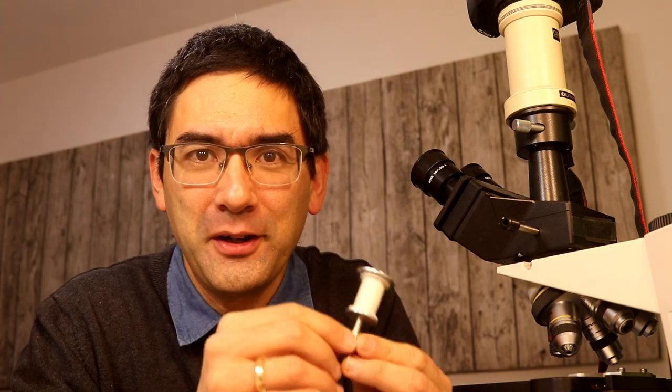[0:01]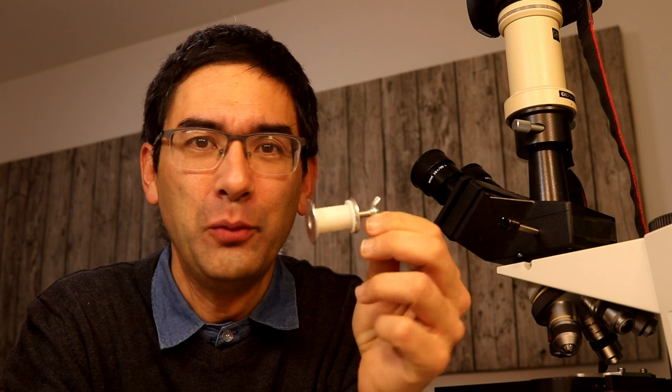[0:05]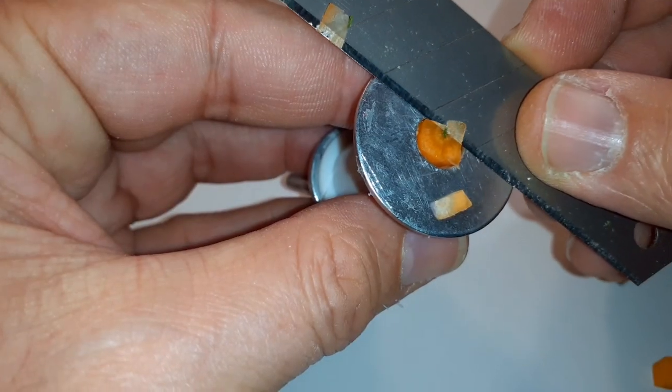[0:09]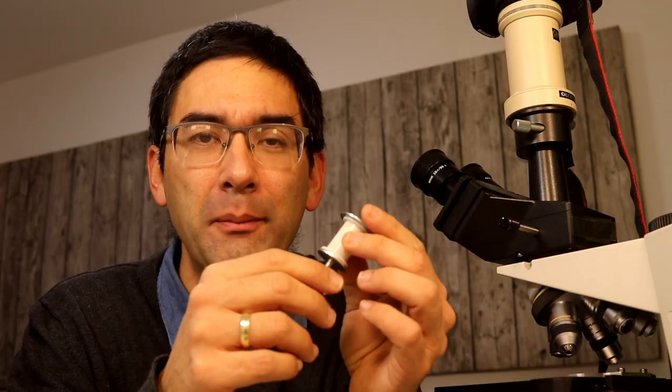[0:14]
Hi, Microbehunter here. This here is a small do-it-yourself, a small homemade microtome. For those of you who don't know what a microtome is, it is used to make very thin cuts for specimens to be used for the microscope, for microscopy. This homemade microtome was basically free of charge.
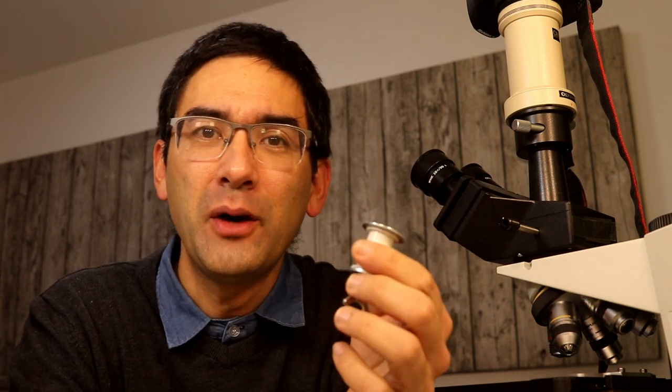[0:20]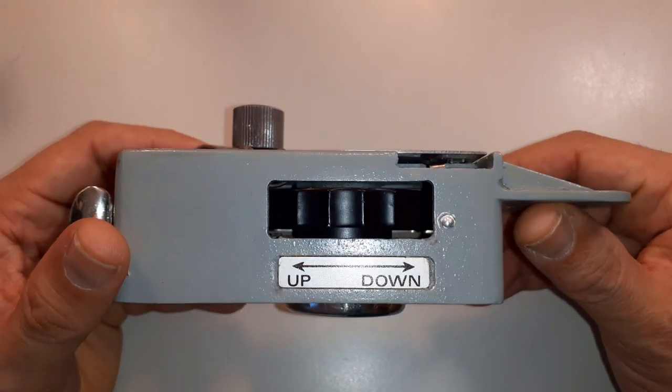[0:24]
In a previous video, I already showed you a commercial microtome, which was extremely expensive, between 300 and 400 euros or dollars. And it might not always be worth spending so much money for a microtome if in some cases a small homemade device like this also does the job.
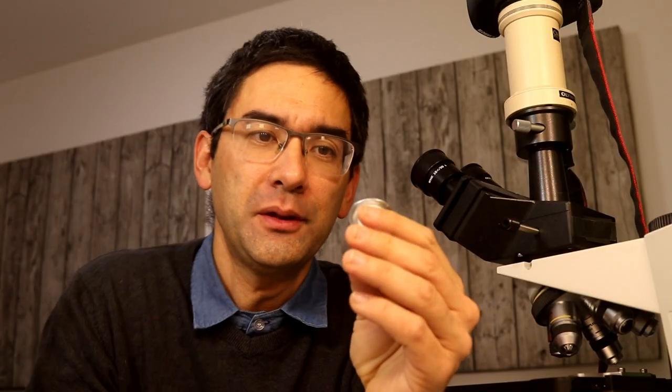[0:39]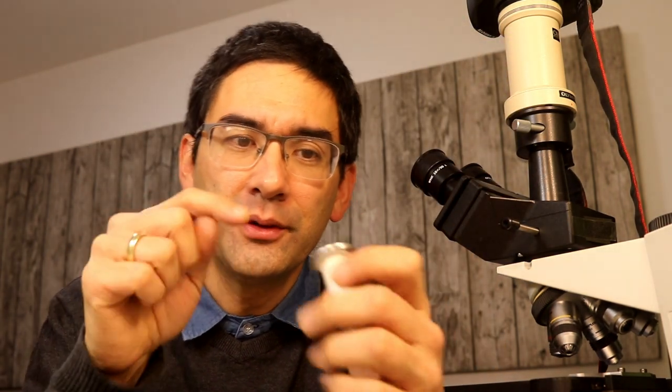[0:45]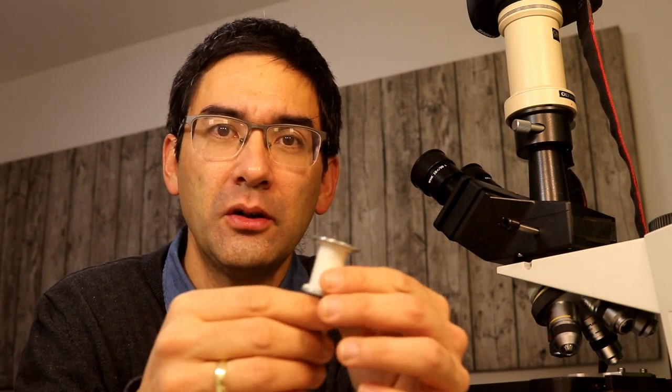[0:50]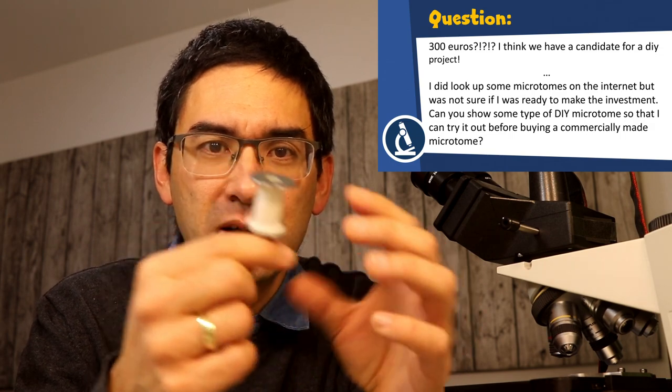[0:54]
Now I did not get the idea myself, but rather it's in a microscopy book here. That's the German version. There is a link to the English translation down in the description. In this book there is a small drawing of how such a homemade microtome could look, and that's basically the drawing that I used to base this one on.
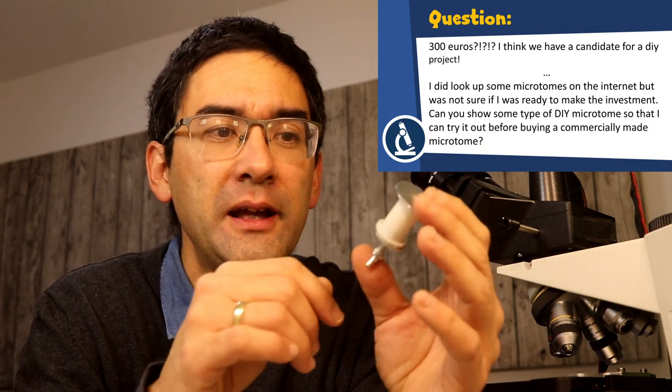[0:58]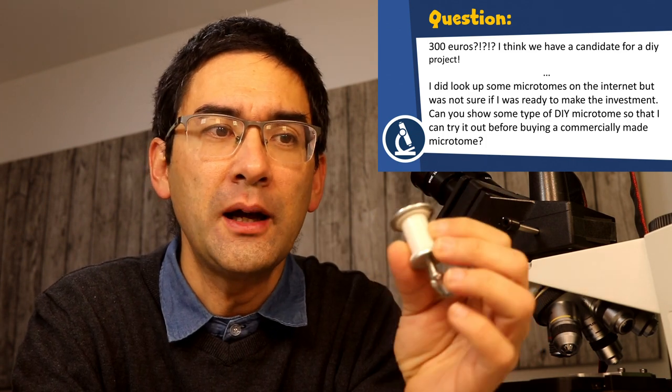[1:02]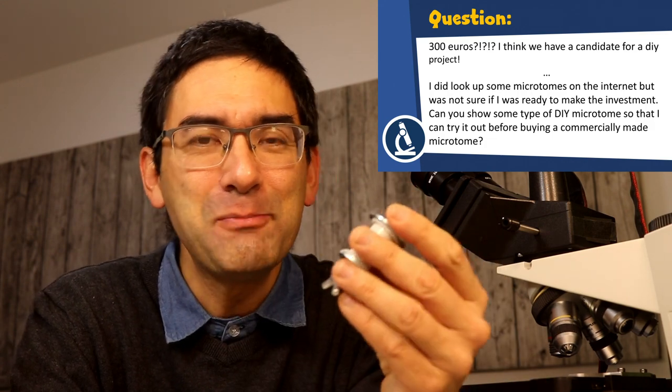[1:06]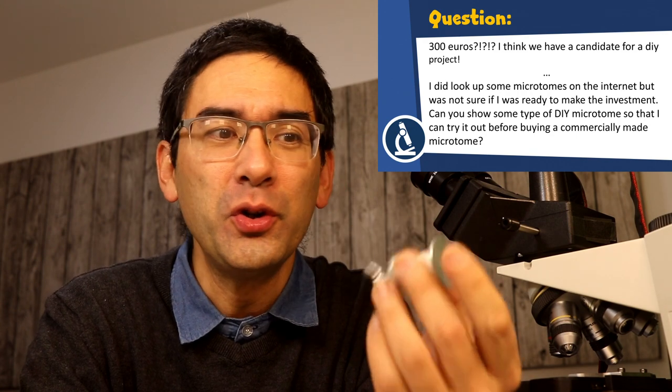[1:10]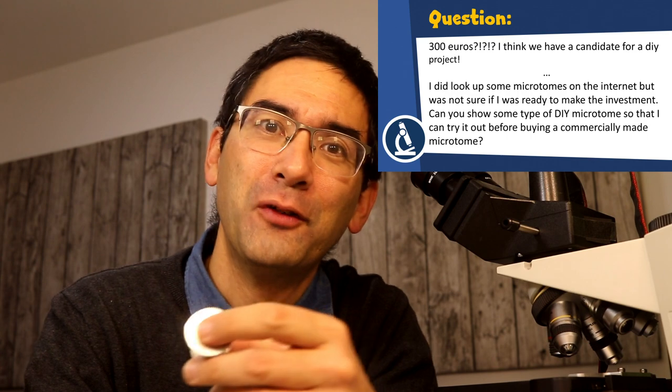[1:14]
I of course had to modify it, but I would say that you probably should first try to make a small microtome like this yourself before you start spending quite a bit of money for a commercial one. So I'm just going to show you what I did, and then you can take it from there, modify it yourself and improve on this. Okay, so let's get started.
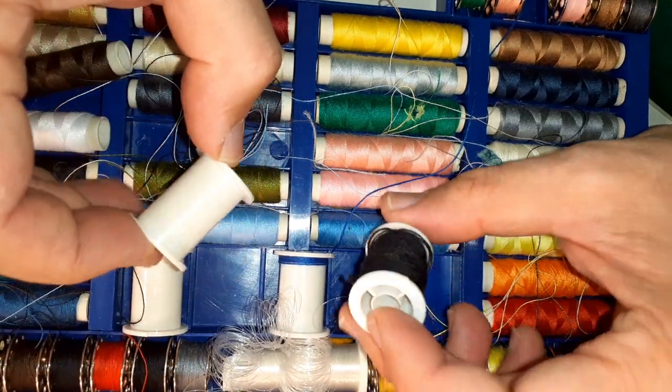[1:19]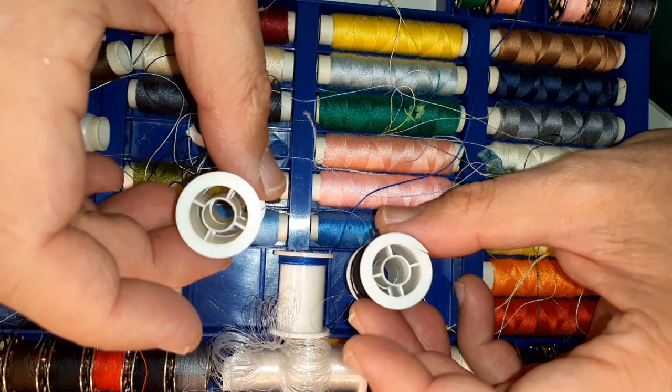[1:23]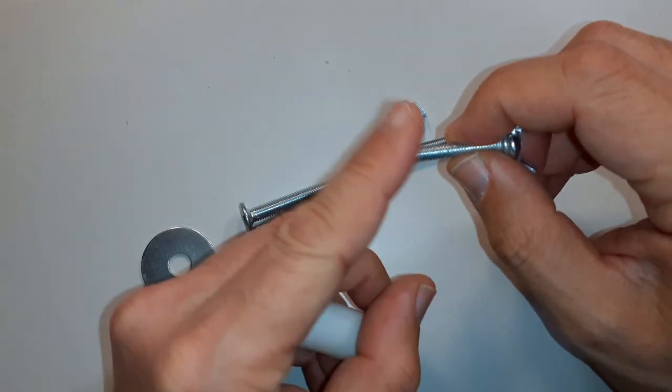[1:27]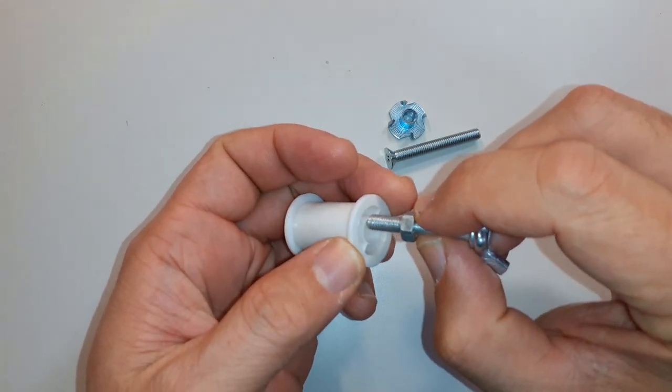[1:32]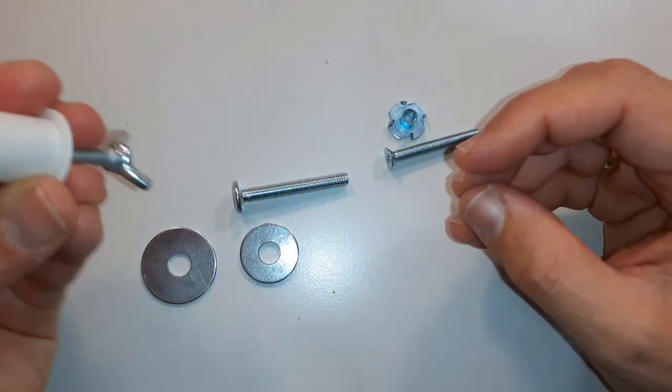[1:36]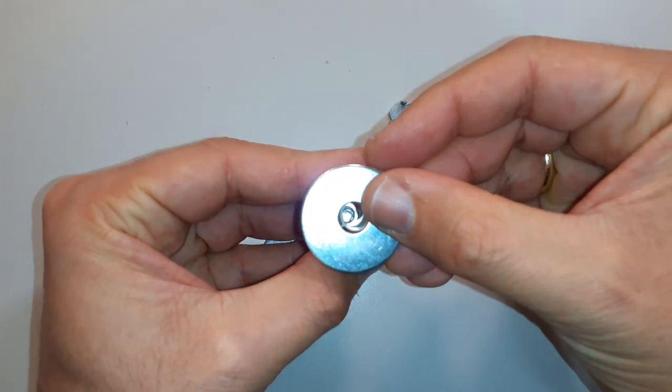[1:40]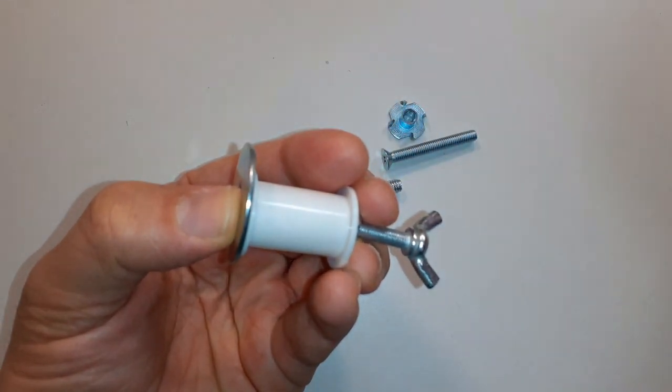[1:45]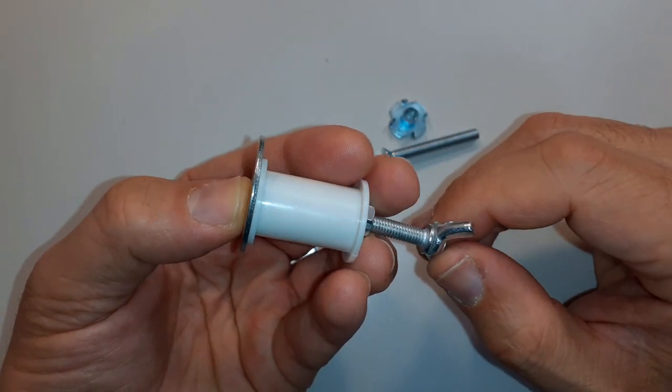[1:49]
The basis of the microtome, the body, so to say, is a thread reel. These days they are made of plastic; in the good old days they were made of wood. I also scavenged my cellar a little bit for nuts and bolts, and I was trying to find some that fit in here. I also found some washers. These washers are pretty important because they also serve as a base for making the cut.
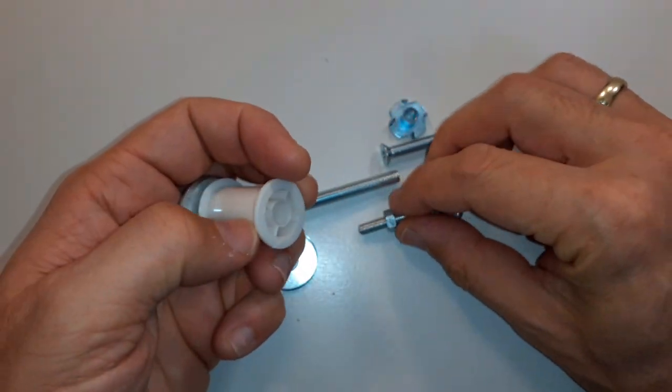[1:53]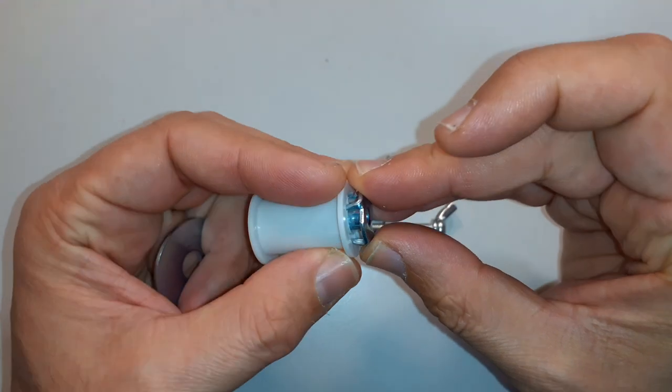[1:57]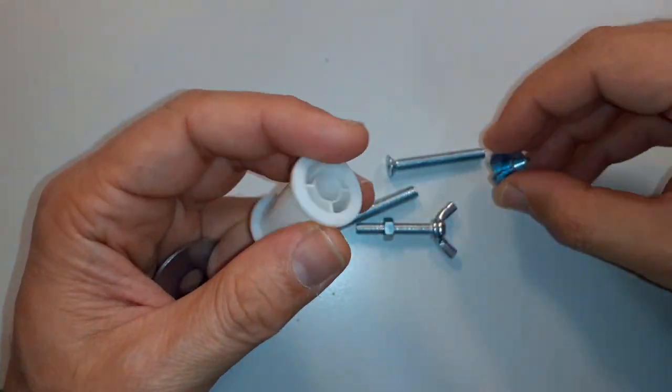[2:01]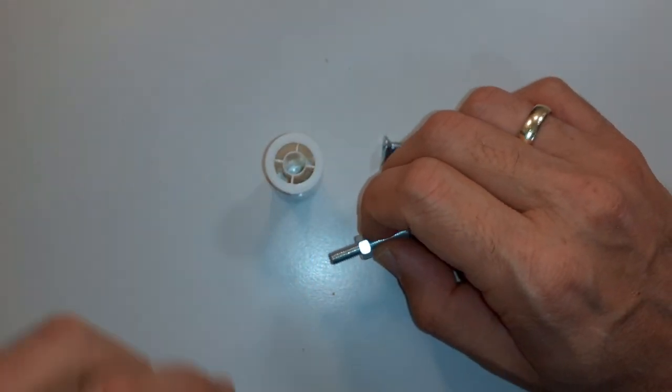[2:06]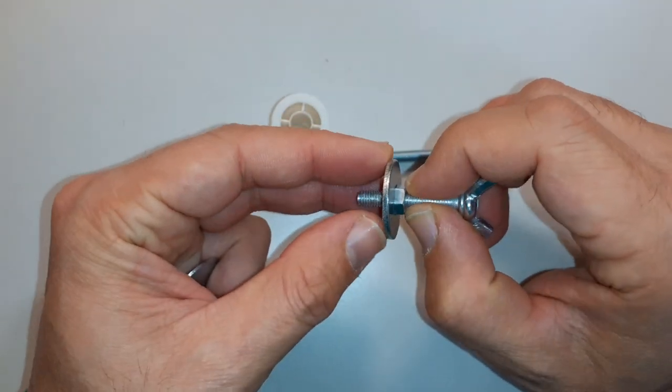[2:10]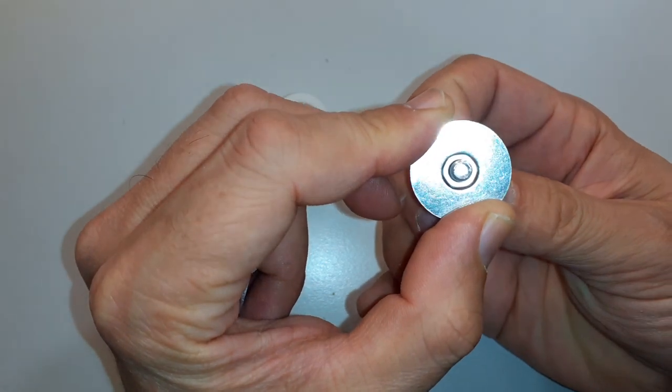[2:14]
The only problem is how am I supposed to fix the nut on the bottom of the thread reel. I was looking around for other possibilities, but I decided not to use this part here. I don't even know how this one is called in English. Then I found a second, smaller washer, and by good chance the nut was able to fit into the center of this washer.
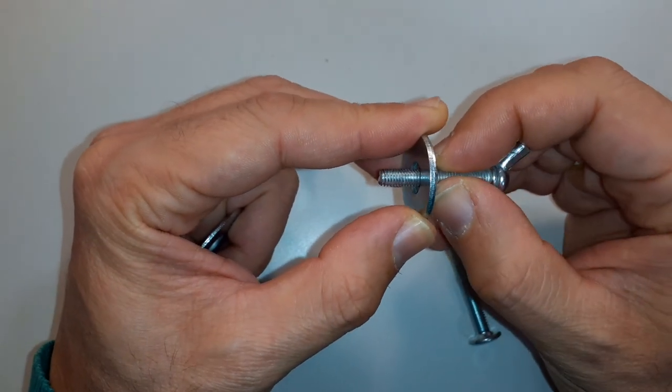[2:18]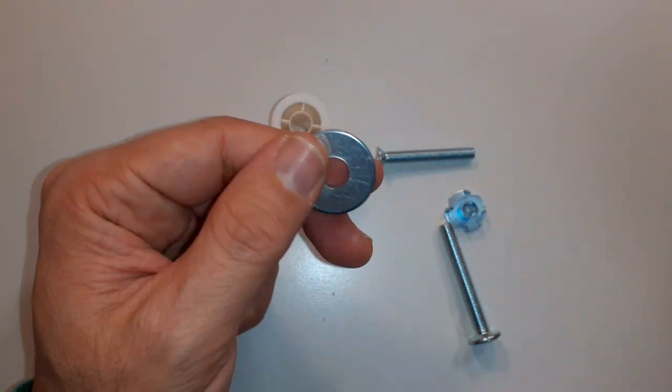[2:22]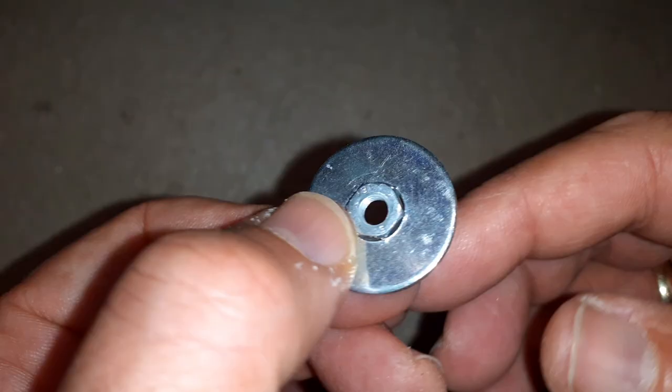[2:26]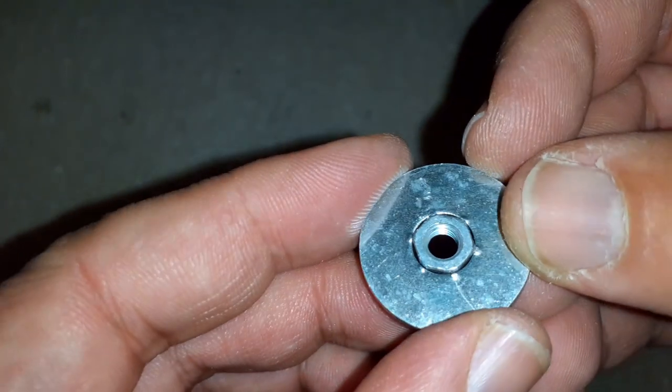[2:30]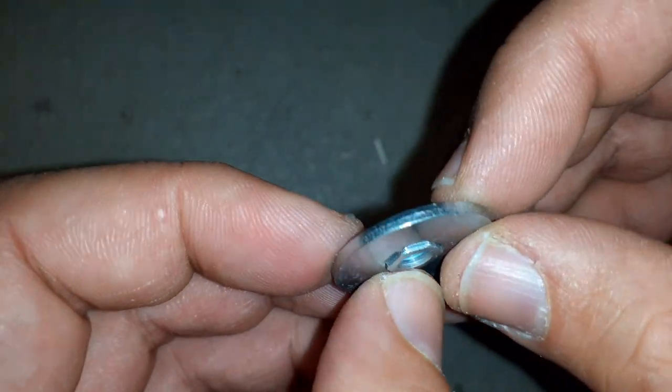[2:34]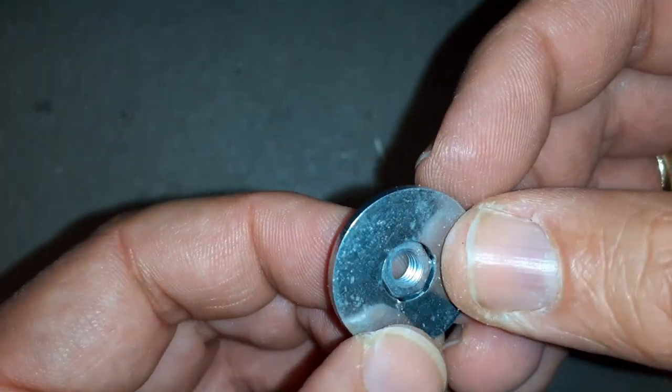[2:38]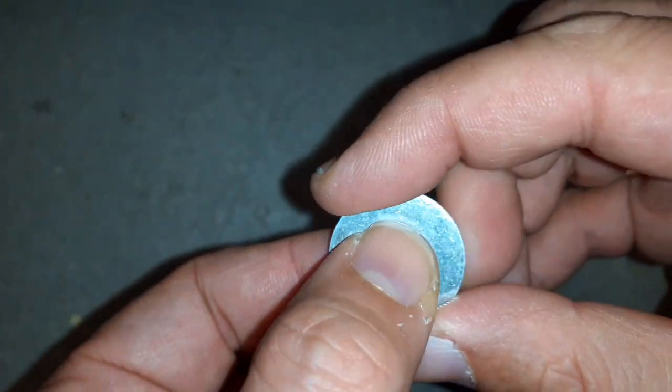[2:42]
So I tried to somehow connect them so that I have an easier possibility to glue the washer to the thread reel. I hammered it in and it looked quite solid. You can even see that the washer is a little bit deformed. But unfortunately, it was totally unstable. It popped out right away. So I needed a way to properly connect these two parts.
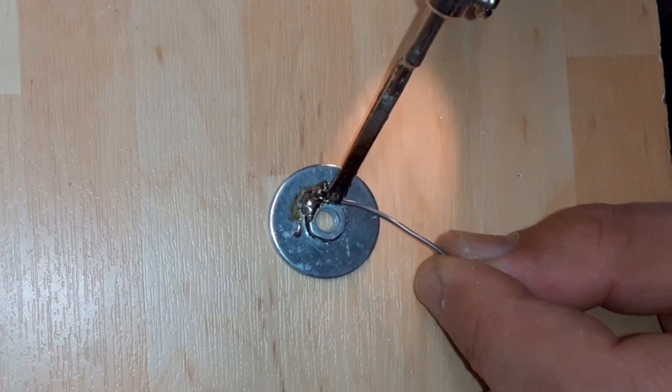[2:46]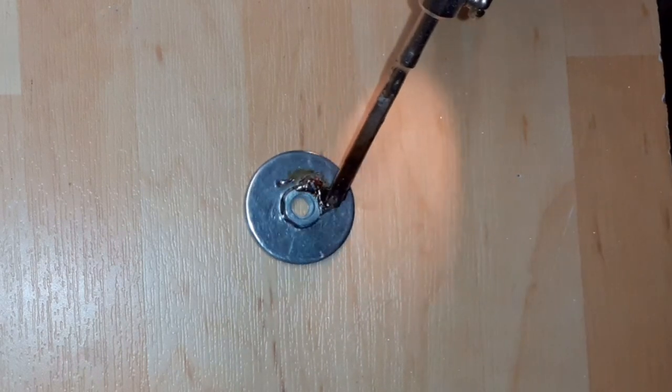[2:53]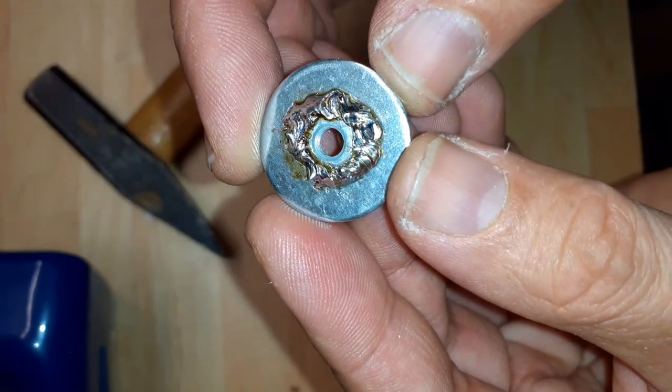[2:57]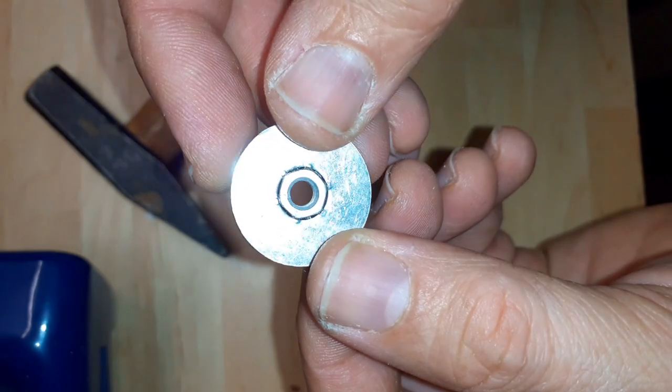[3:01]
And I used my high-performance soldering iron. It was still not quite easy because the metal absorbed the heat so quickly and cooled down so quickly that it took me quite a bit of time. And it did not look very nice. So there's got to be a better way of doing that.
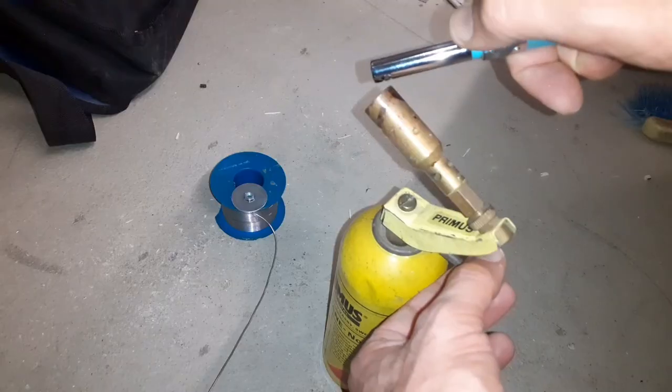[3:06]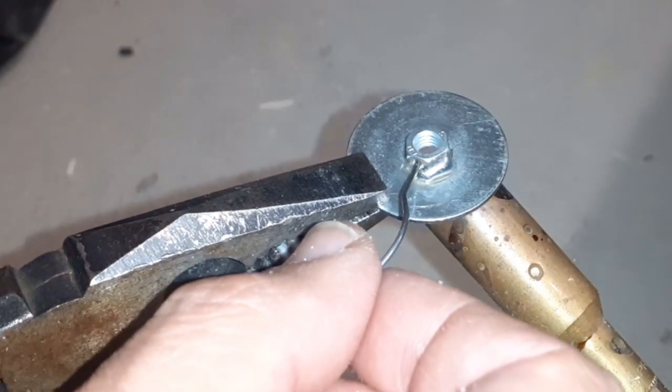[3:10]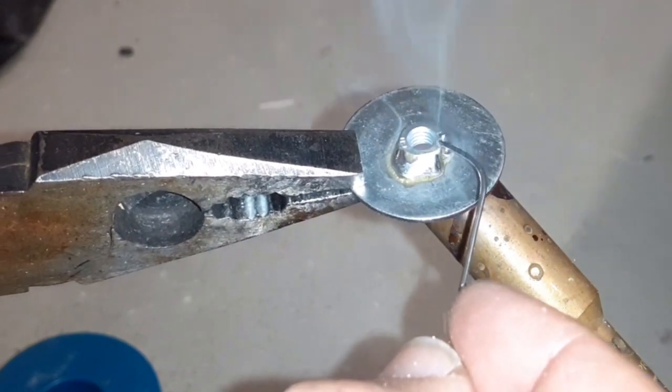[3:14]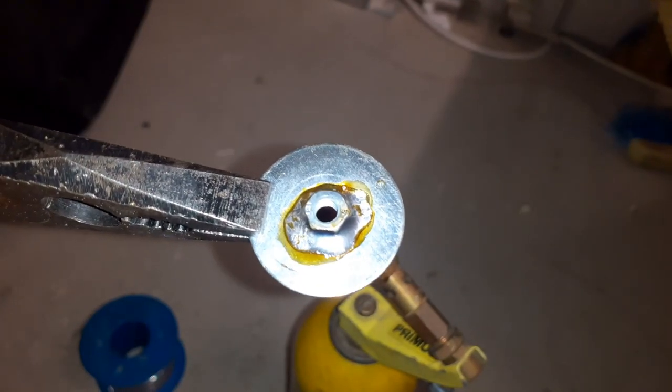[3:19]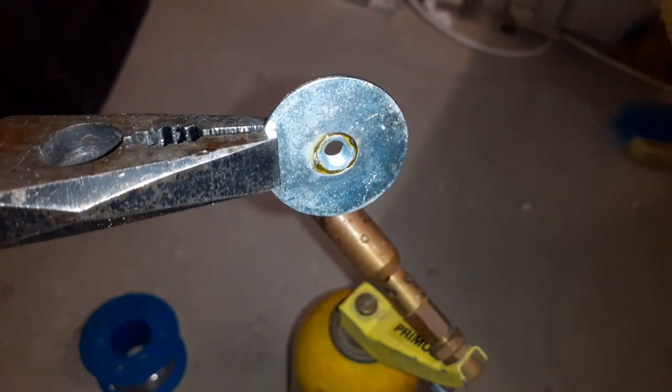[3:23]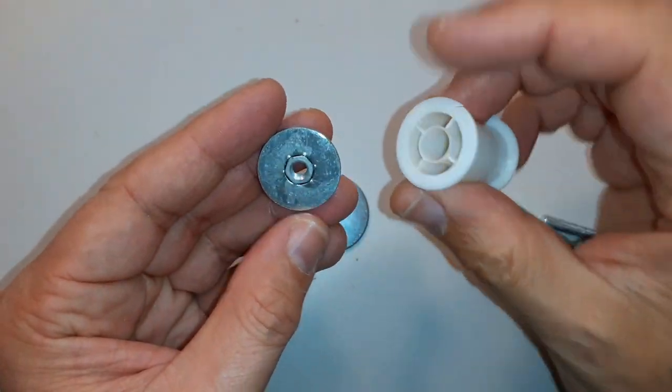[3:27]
But it was actually a strong and stable connection, and I discovered, far too late, that you can also use a gas burner like this to directly melt the solder and connect it together. It was much faster, much easier, and it also looked much nicer. So that's actually the recommended way, and I did not end up using it because I discovered this possibility only after I already finished the microtome.
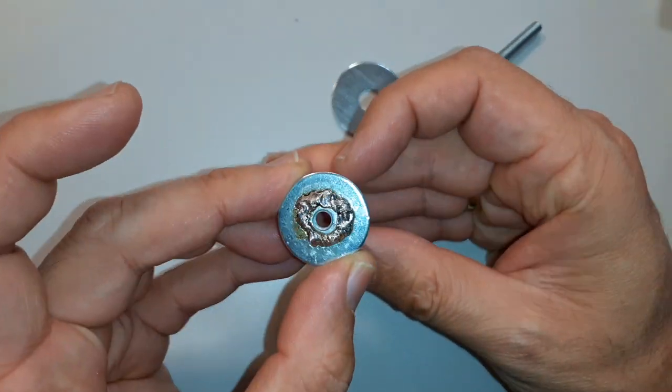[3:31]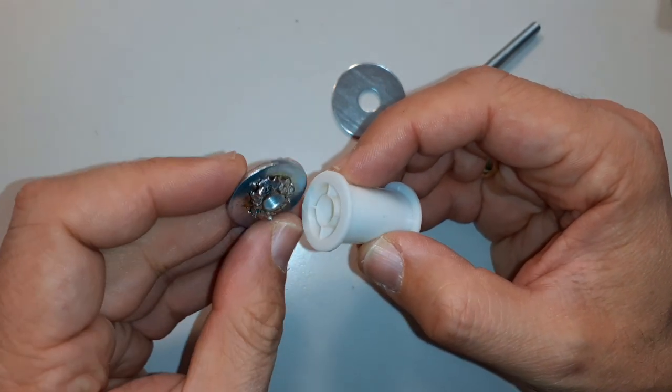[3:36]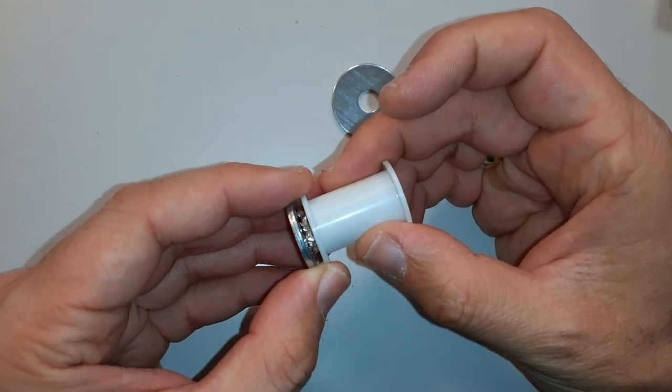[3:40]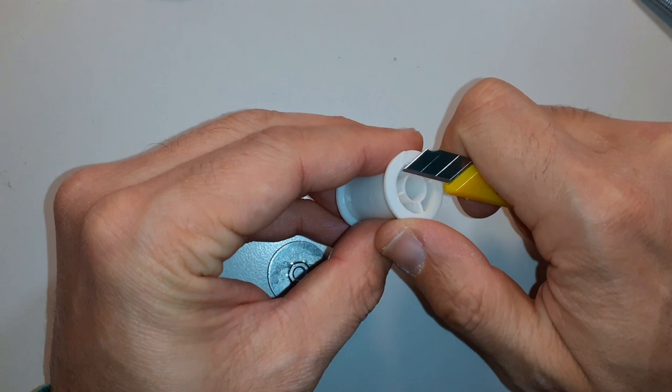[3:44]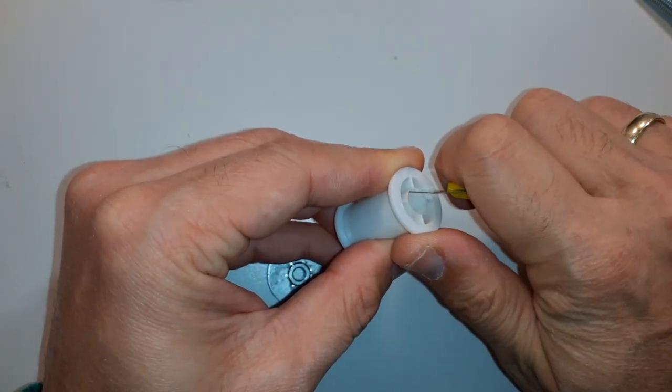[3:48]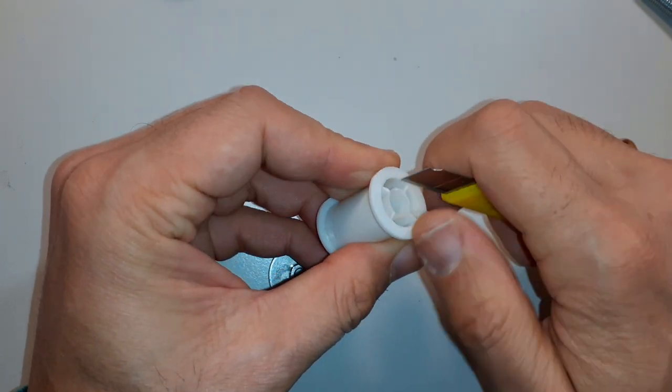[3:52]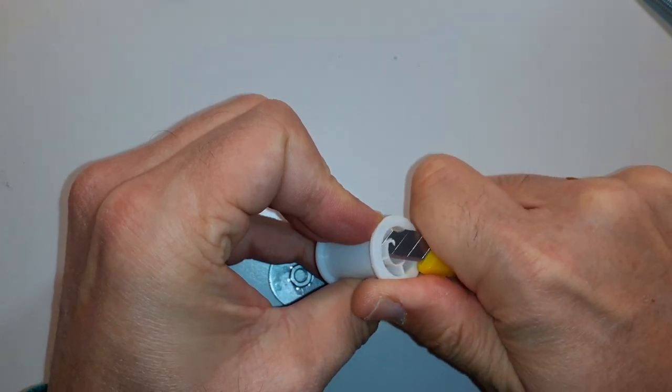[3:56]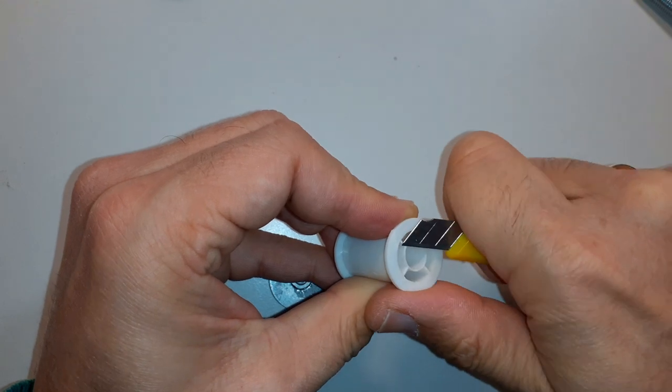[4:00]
I can either glue it like this, but it doesn't look nice. So what I'm going to do is remove the central part here. I'm going to remove a little bit of this plastic so that it can hide my embarrassment, the embarrassment that it looks kind of ugly. The plastic was soft enough that it was possible to easily remove a couple of millimeters of the central part of the thread reel. That's only cosmetics, so this is absolutely not necessary. It just makes the whole thing appear a little bit nicer.
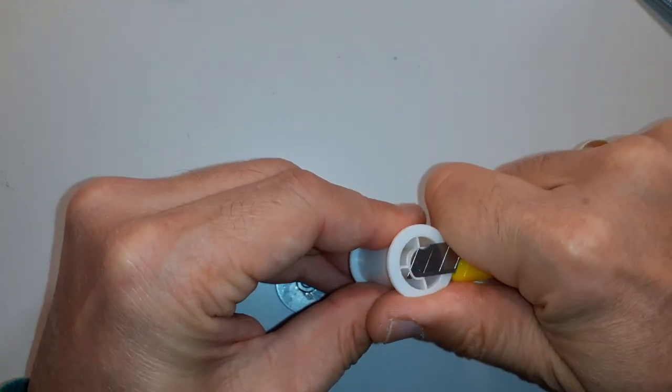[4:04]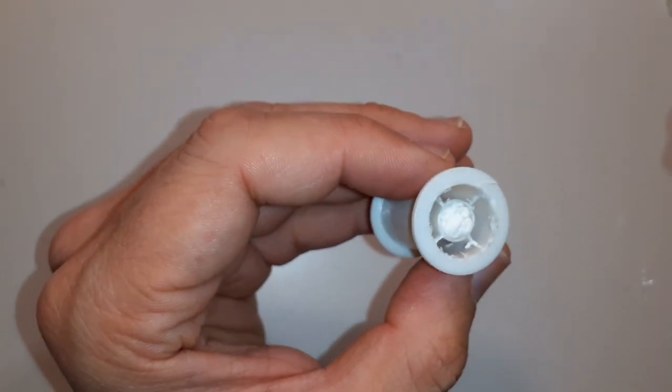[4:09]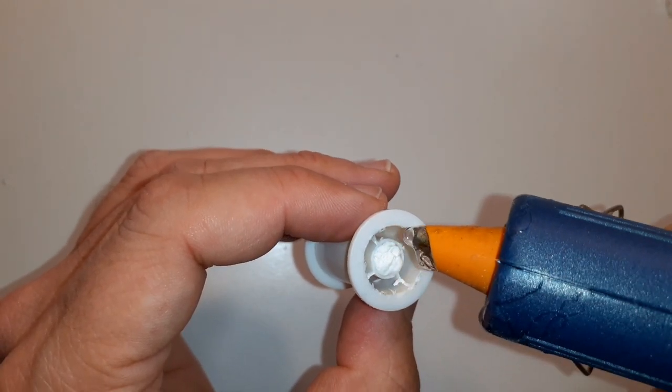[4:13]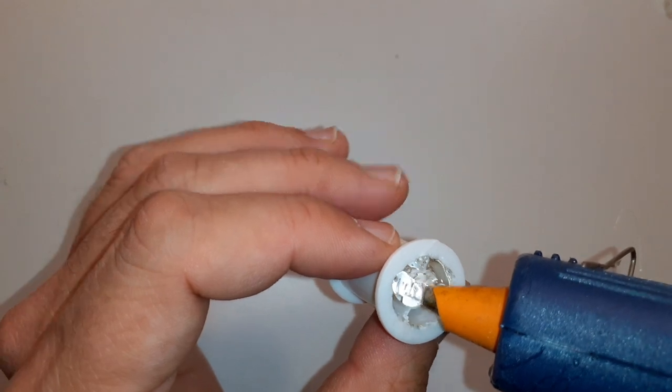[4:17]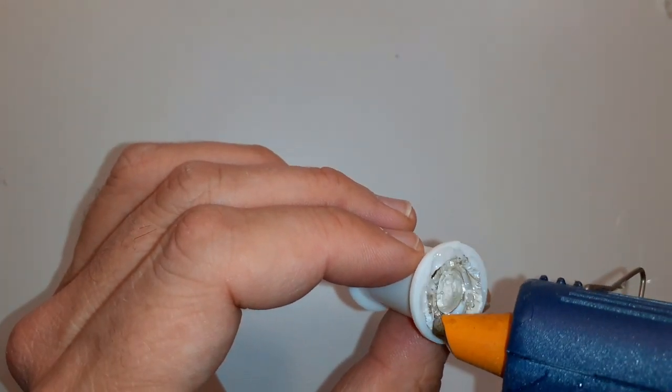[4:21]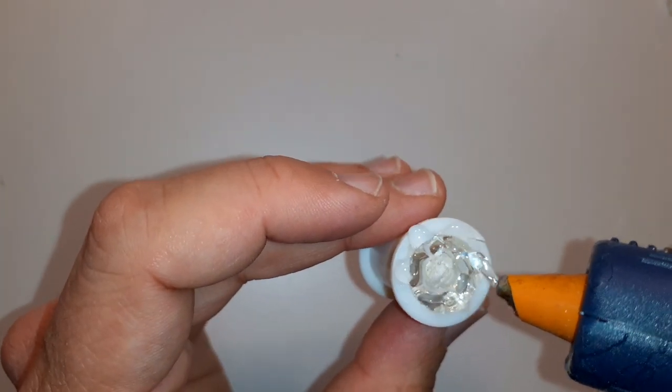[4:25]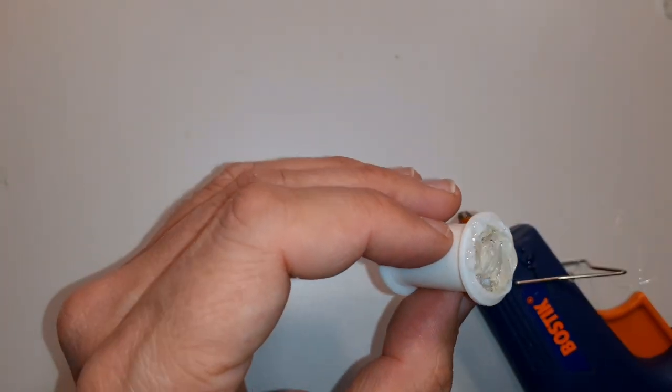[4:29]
It was also a little bit of experimentation, and that's the reason why I simply tried out different possibilities. Then I put some tissue paper into the center so that I can fill up everything with hot glue. I used plenty of hot glue, and this really connected the washer quite well with the thread reel.
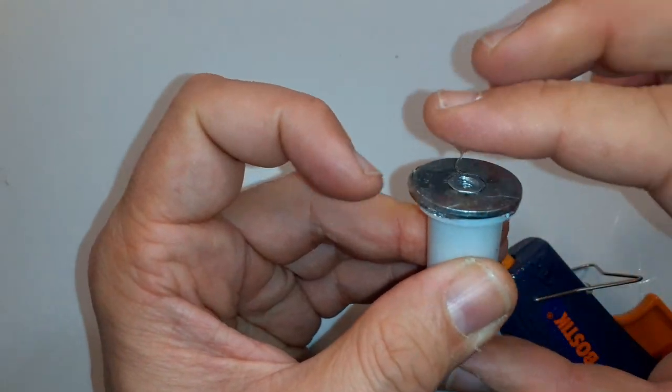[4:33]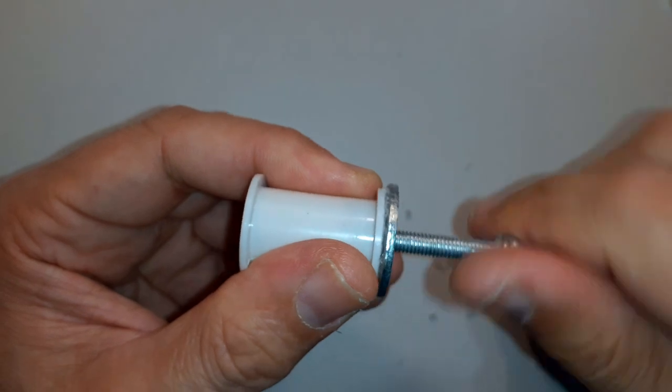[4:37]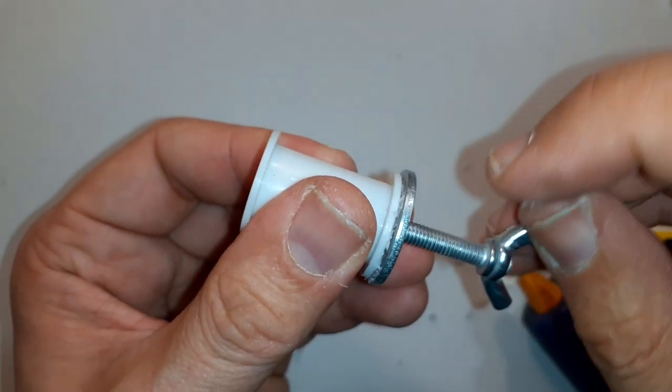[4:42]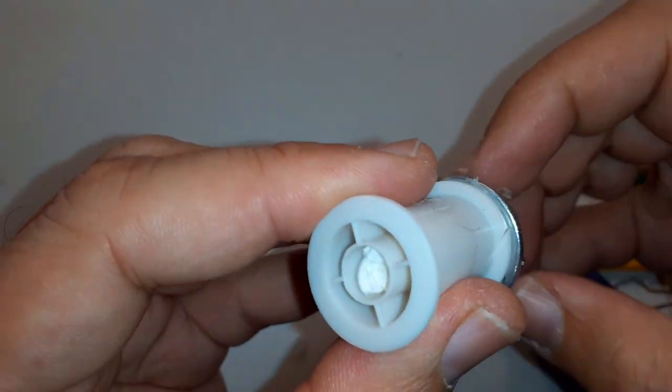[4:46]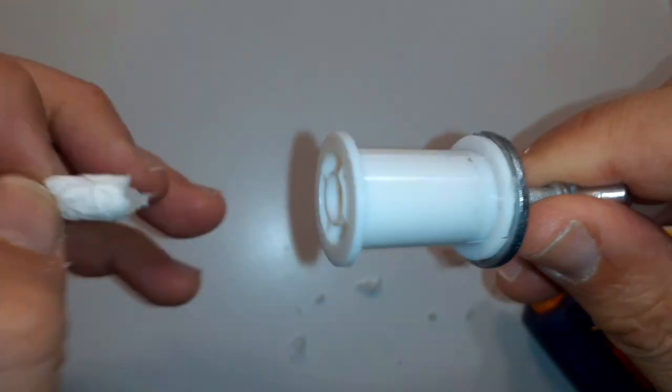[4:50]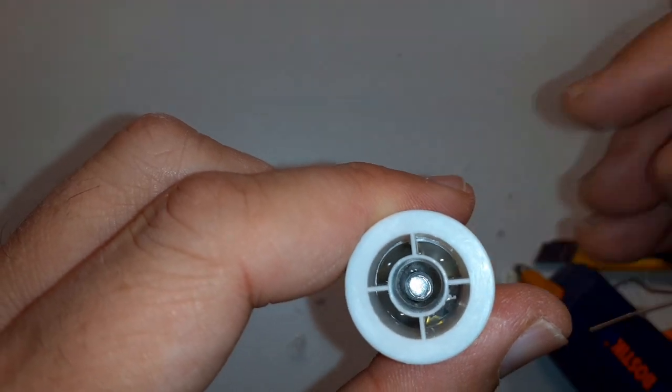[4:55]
You have to center it. It was a little bit difficult because it was so hot, obviously. But after a couple of minutes, I tried to put the screw in, and it worked. I was quite happy that this connection was so stable, and I'm now pushing out the tissue paper again, which protected the central part. So that's how it looks from the top.
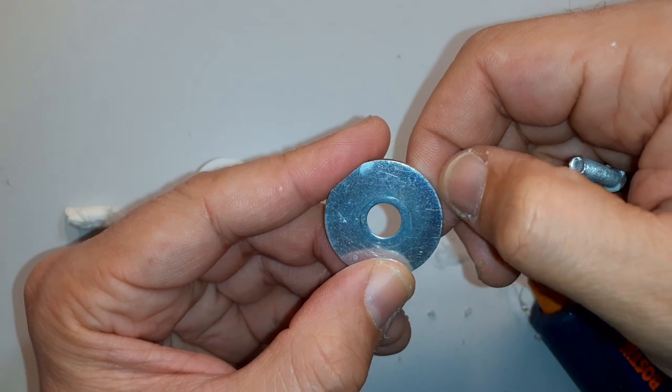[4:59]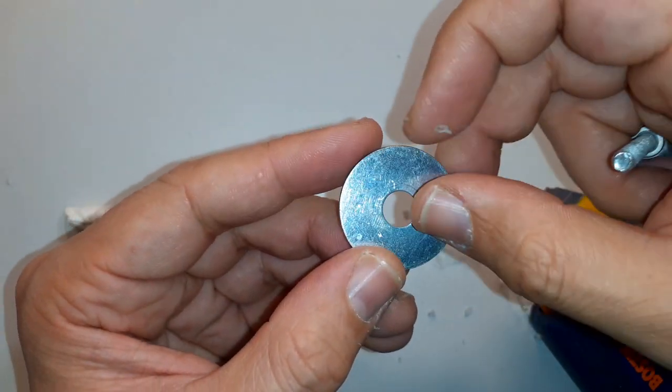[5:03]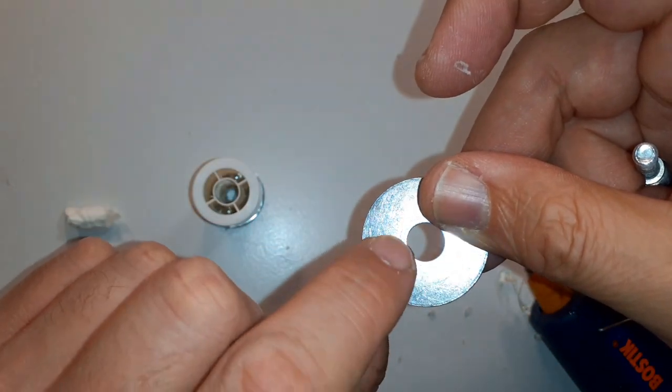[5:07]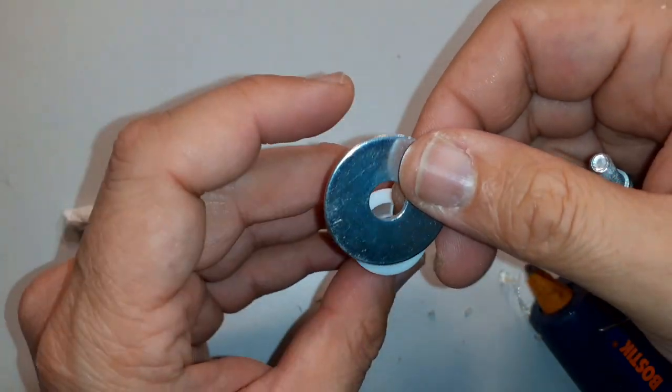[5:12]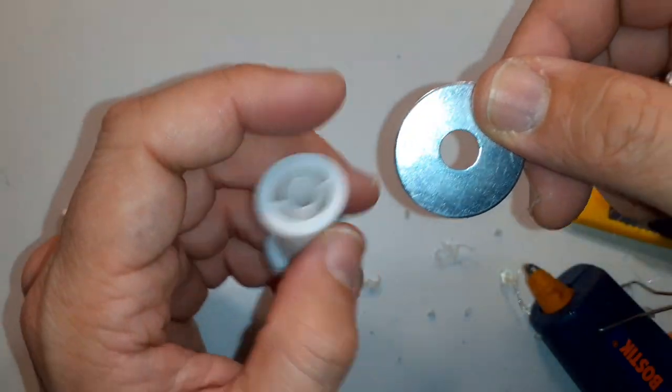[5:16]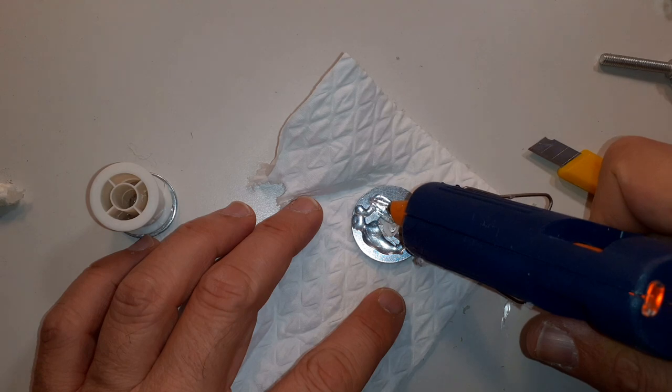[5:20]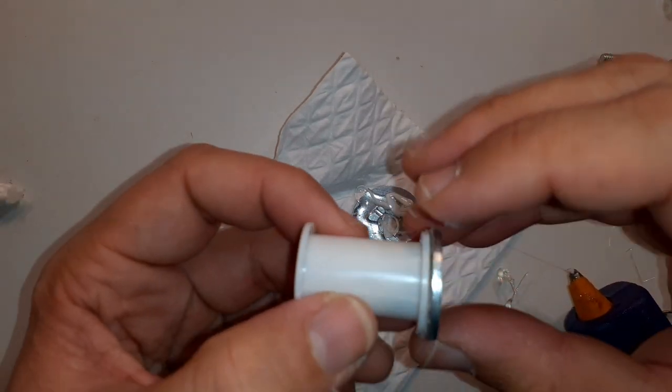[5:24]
And then I had to attach the other washer. Here it's really important that you use the correct surface, because some washers are not completely flat on one side. You have to make sure that the flat surface of the washer is on top. It's really important, otherwise you're not able to glide the knife over it without any resistance or problems. So that's the way I'm going to connect it. Also very easy, I used plenty of hot glue again, and then I stuck it on here.
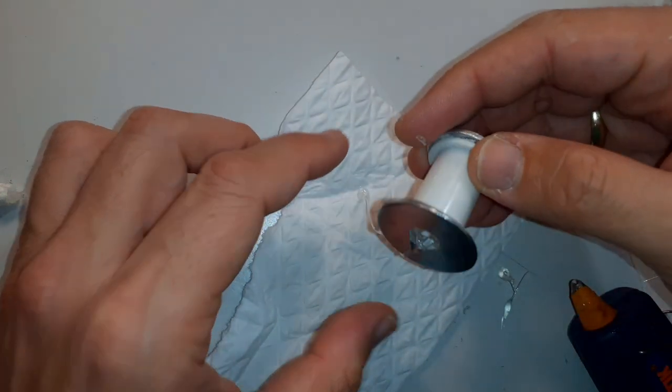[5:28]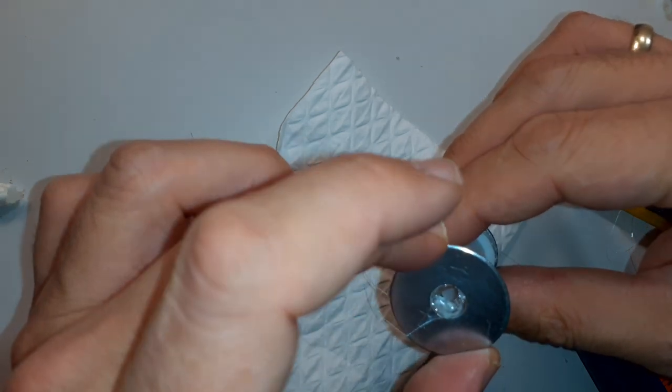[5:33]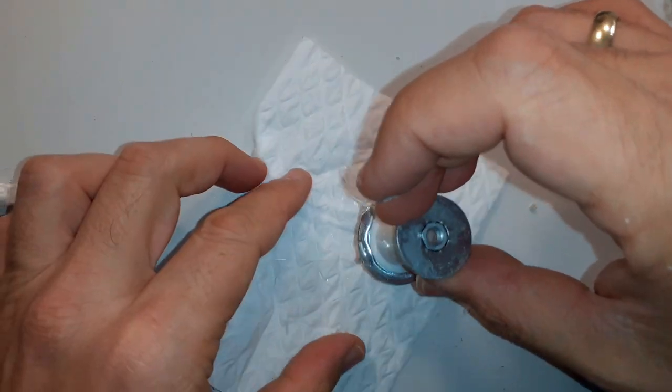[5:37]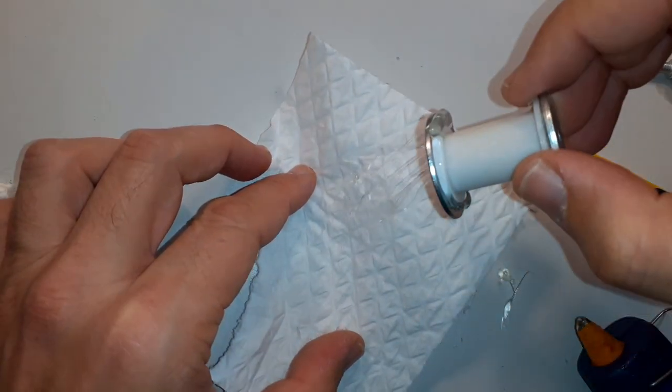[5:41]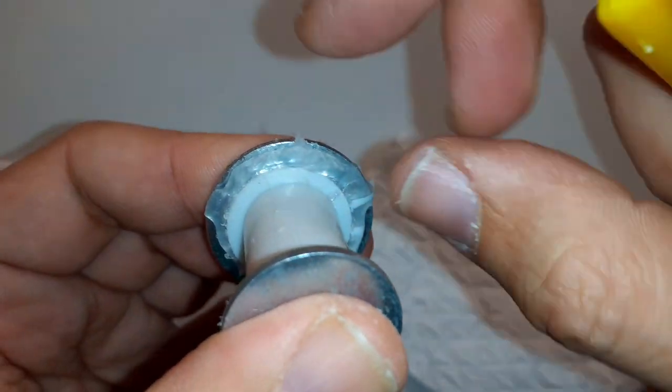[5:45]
And strictly speaking, we're already finished. Okay, I just had to center everything again. And at the very end, I simply removed all of the excess glue. Also rather a cosmetic issue. So you can see plenty of excess glue that is simply removed.
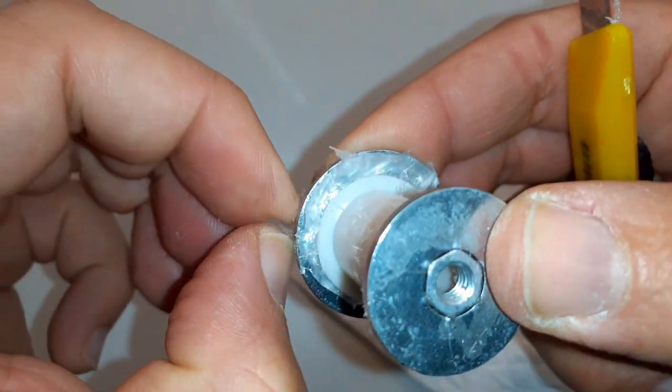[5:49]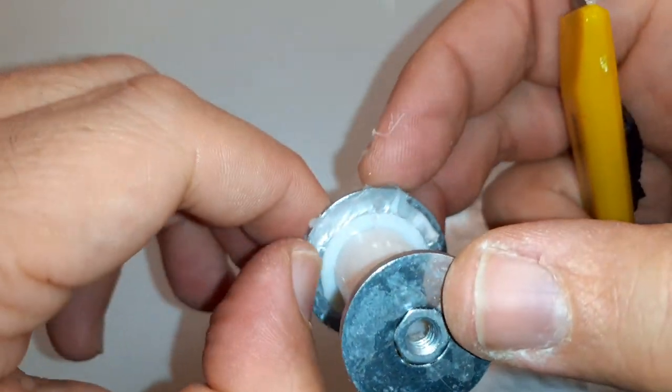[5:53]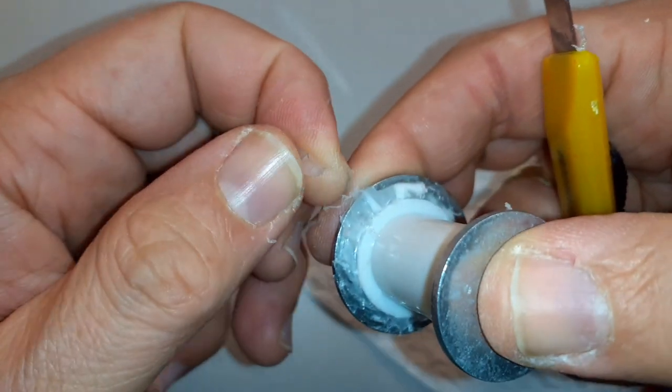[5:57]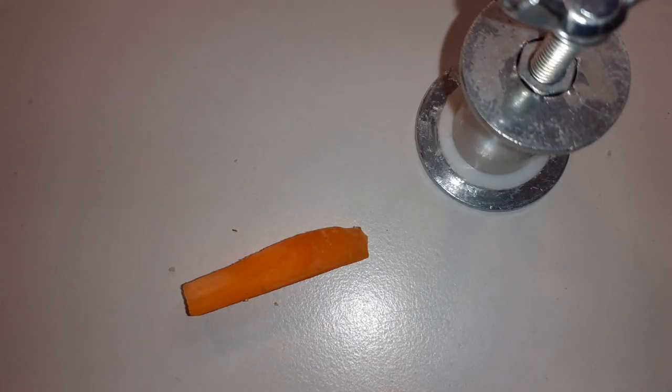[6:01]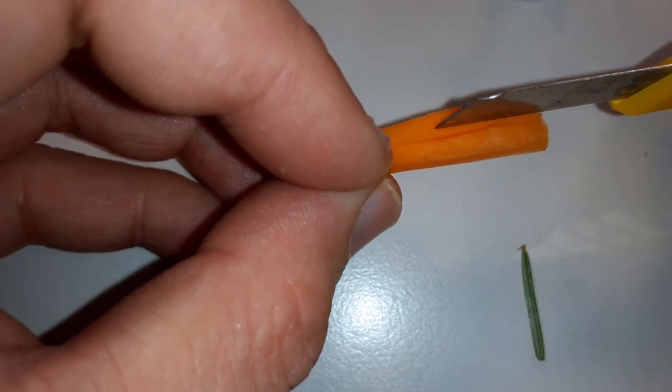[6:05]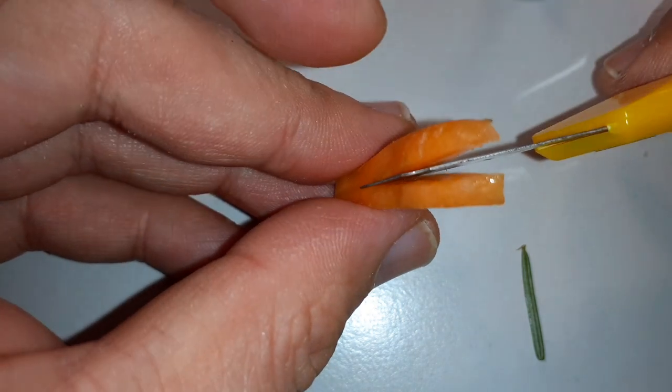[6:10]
Not necessary, but yeah. That's basically the first time even that I'm making a microtome like this, so it might not be the best or most ideal method. As I already mentioned before, please do leave your comments and experiment a little bit, and maybe you have a better possibility here. I'm using a carrot to hold a pine leaf.
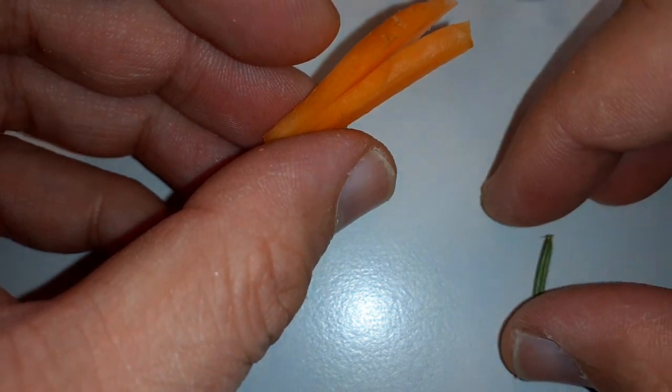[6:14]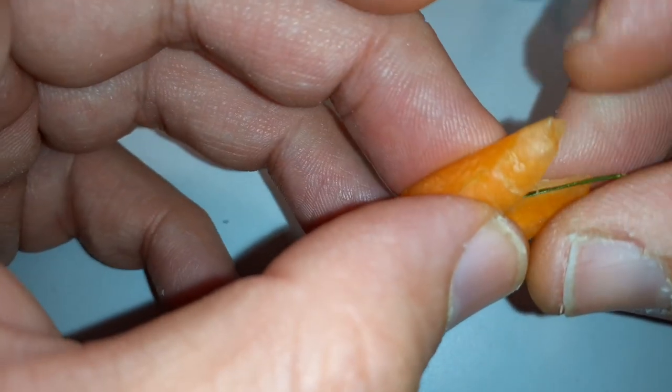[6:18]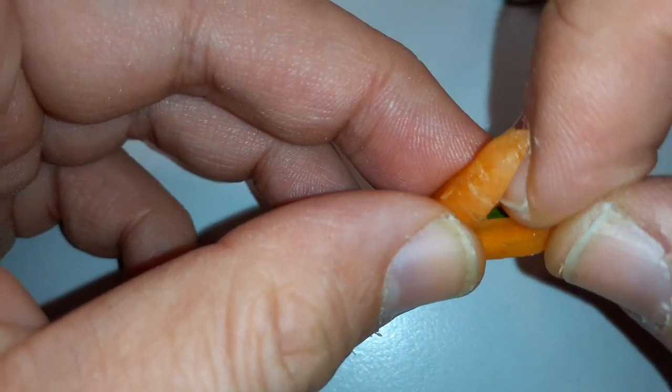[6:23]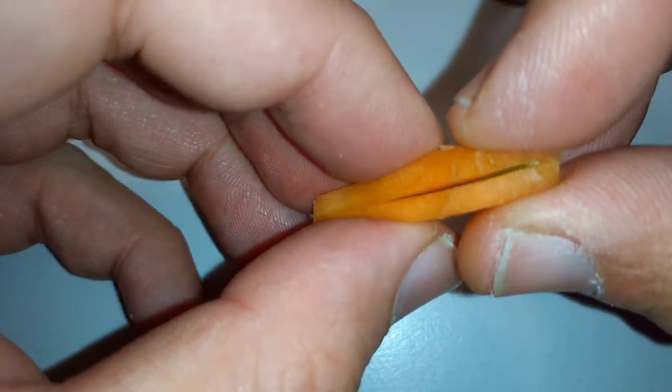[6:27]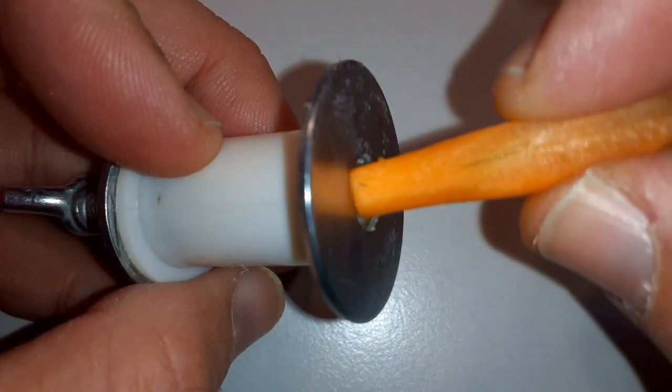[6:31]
So I'm slicing a carrot in half. It's connected still at the very bottom, and I'm putting a pine leaf in here, and the carrot will act as a holder, so to say. Normally you can also use so-called elderberry marrow, but yeah, carrots also work. And the diameter has to be right so that you're able to fit it all the way in.
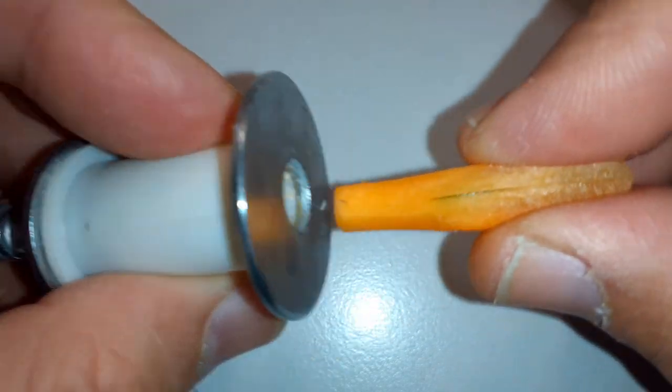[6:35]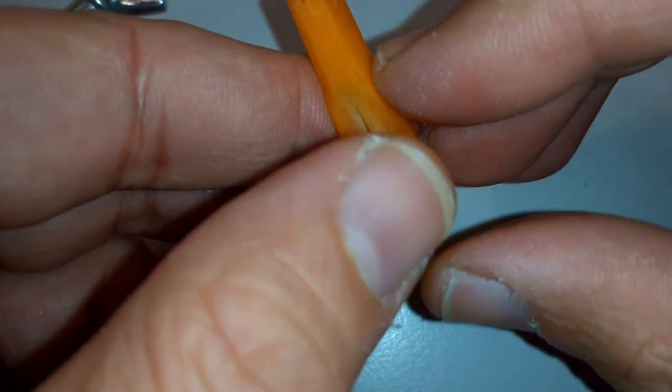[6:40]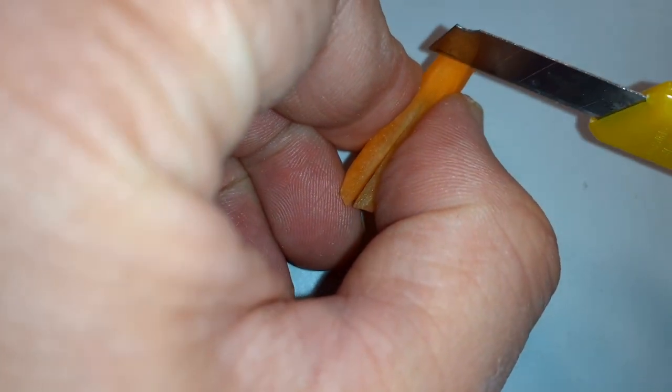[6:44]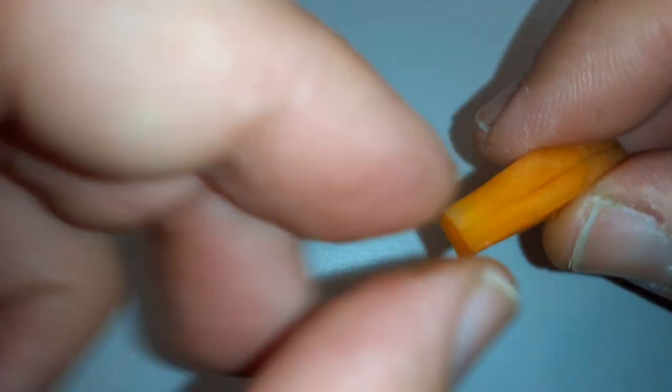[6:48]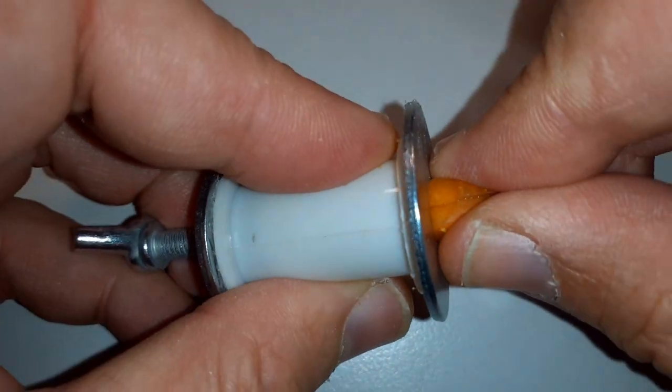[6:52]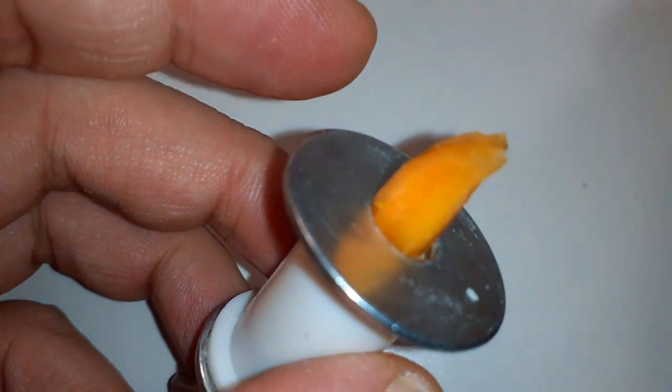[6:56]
It's got to touch the screw on the other end, so yeah, you can see that the carrot looks a little bit too thick, so I had to actually trim off some of the parts and make it a little bit shorter, because that's really important that it touches the screw, or you can try to turn the screw out a little bit. In any case, it worked quite well. And we are ready to go, so to say.
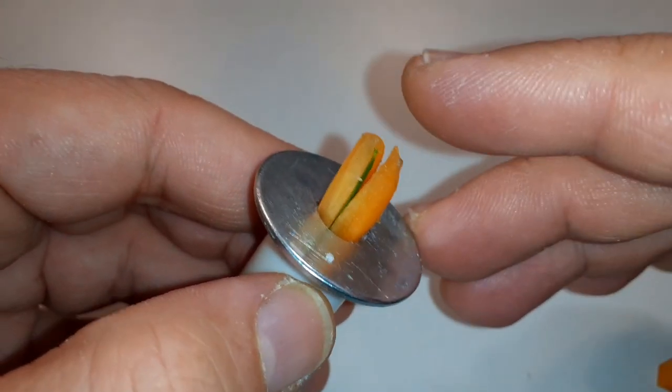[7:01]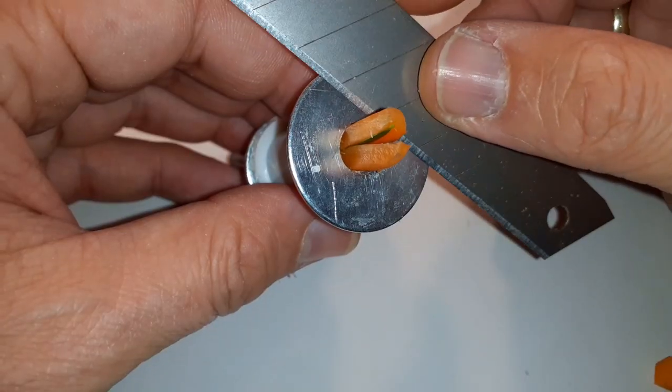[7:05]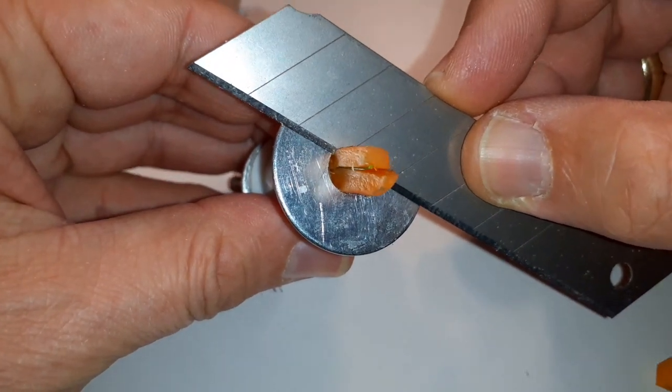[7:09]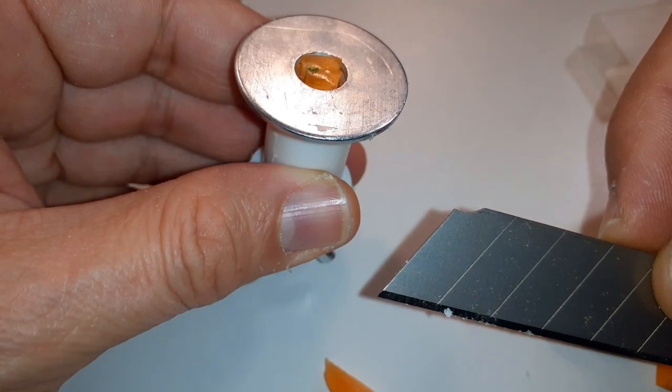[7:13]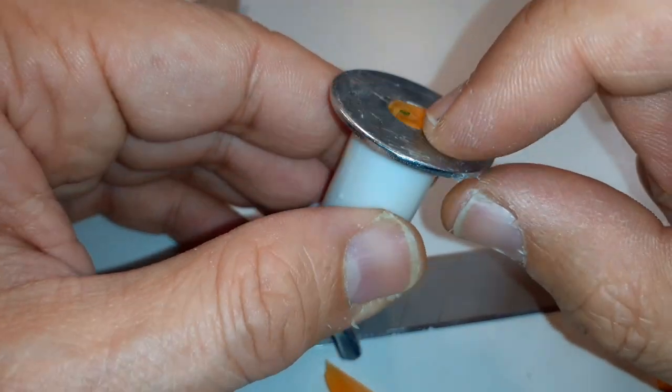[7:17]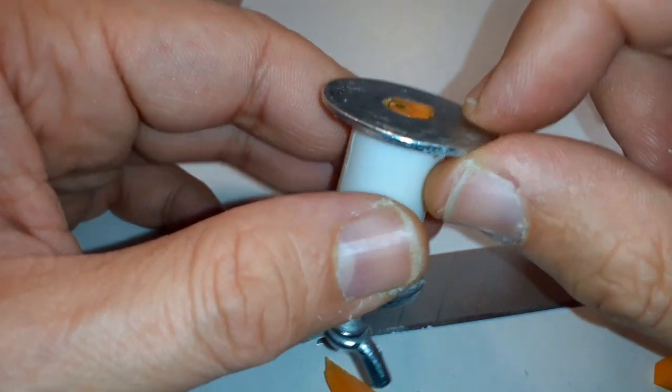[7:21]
And I'm simply using a sharp knife. A razor blade would probably be even better. I didn't have one, but those sharp knives are also solid enough. They don't bend very easily. This was basically the first cut, and I discovered that the cut was not very nice. It was not completely flat, so I had to, of course, do another one.
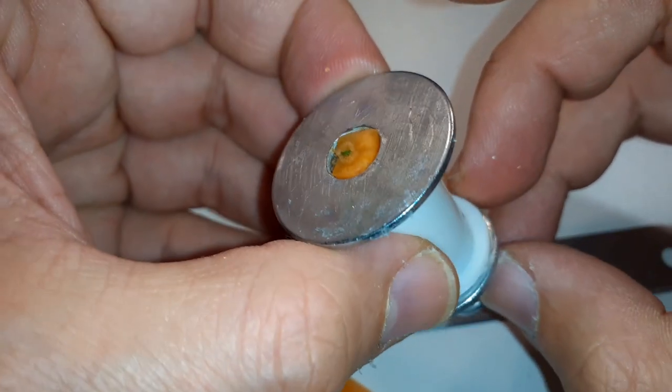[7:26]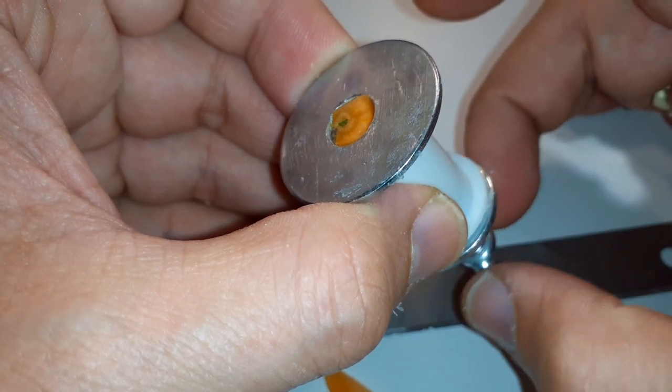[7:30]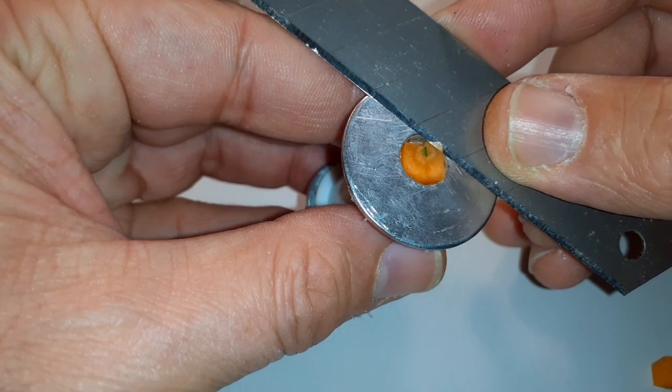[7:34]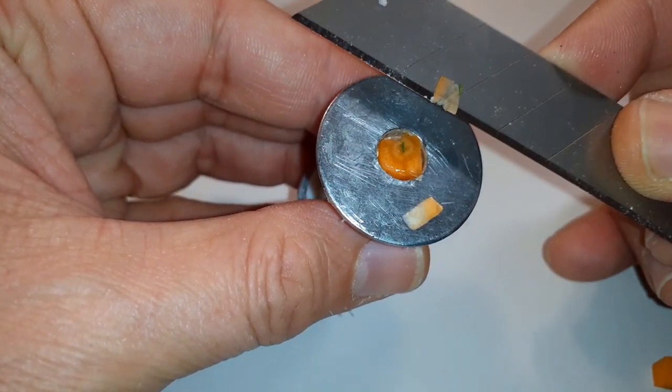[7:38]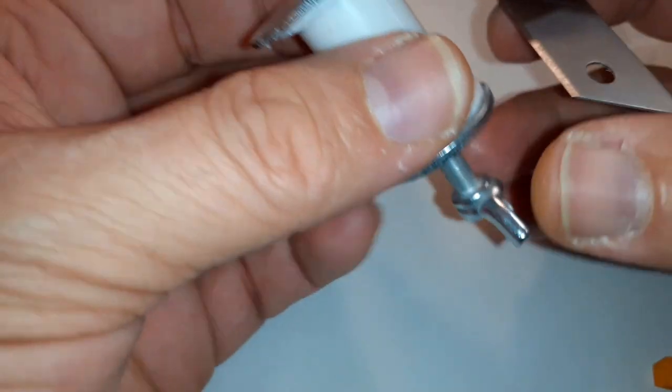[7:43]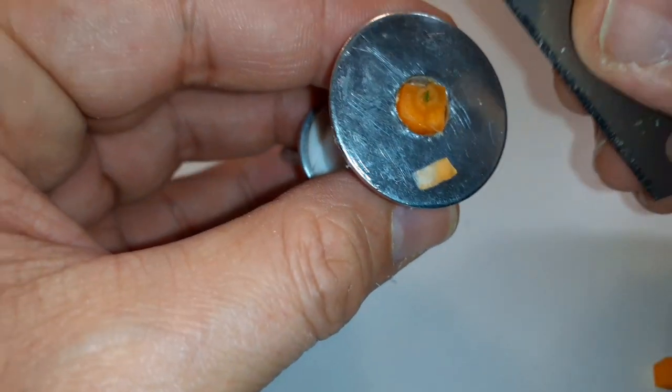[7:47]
So I turned the screw a little bit, and this moved the carrot with the pine leaf out, and maybe holding the knife a little bit differently would work better. Keep it pressed against the washer, and it seemed to have worked, but I think I did not catch anything of the pine leaf. I don't know now. Yeah, a quarter rotation or half a rotation was enough, and then the next cut. I think these first cuts were still quite thick, okay?
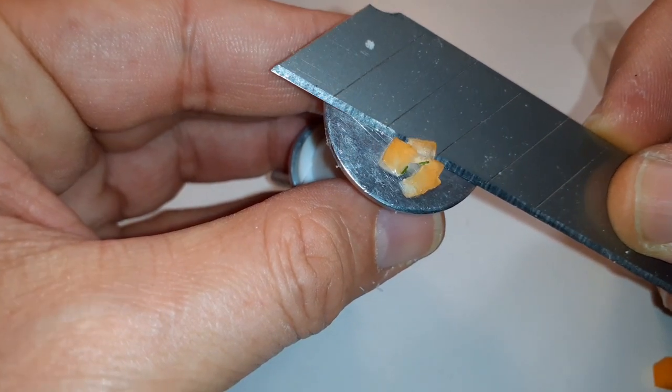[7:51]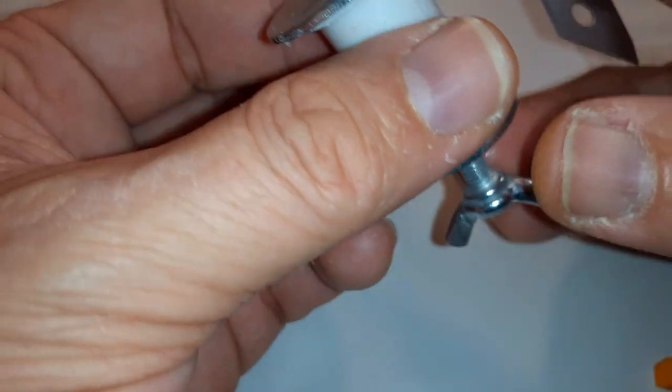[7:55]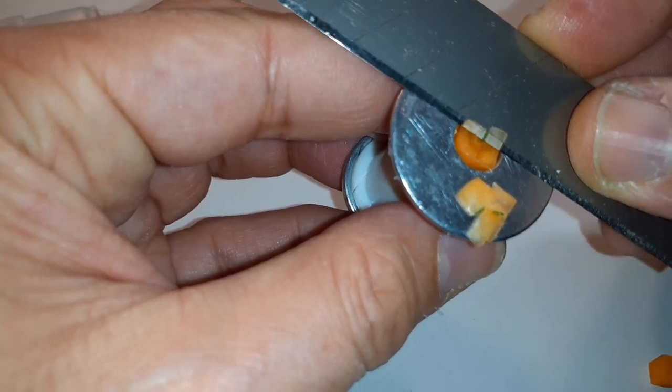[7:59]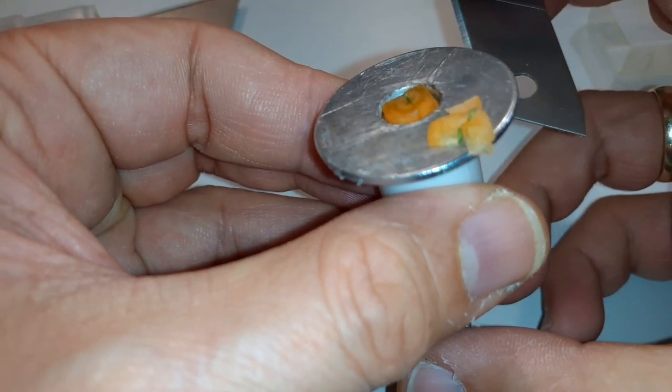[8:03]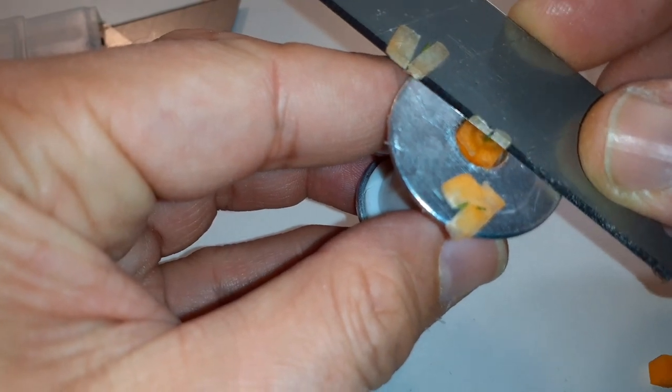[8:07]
So I think this was not half a rotation. Quarter rotation should work. Let's try it again, and see, it works. Okay, this was a quarter rotation again, quarter rotation, and cut, yeah? Again, here you have to do a lot by trial and error, because it's not always very reproducible.
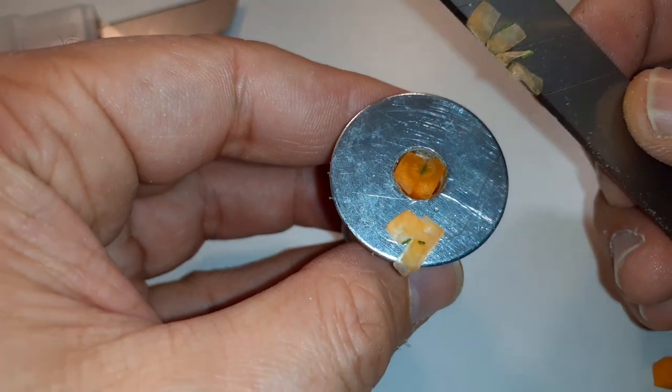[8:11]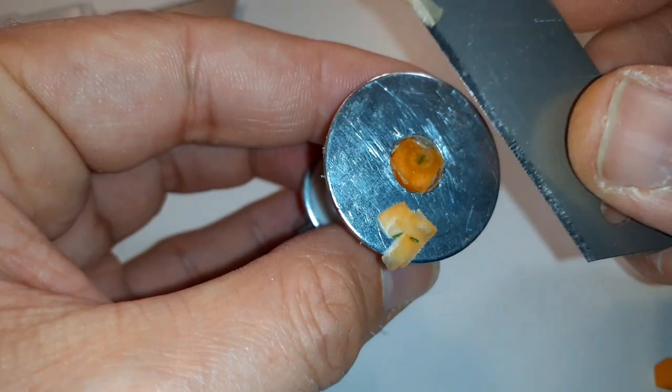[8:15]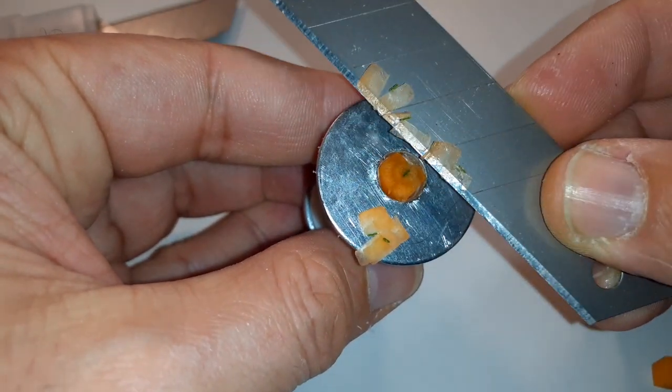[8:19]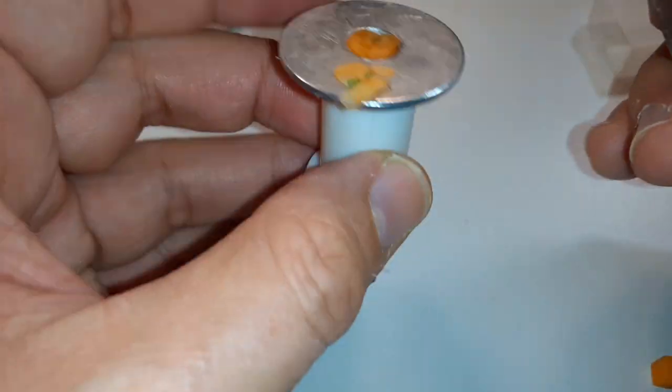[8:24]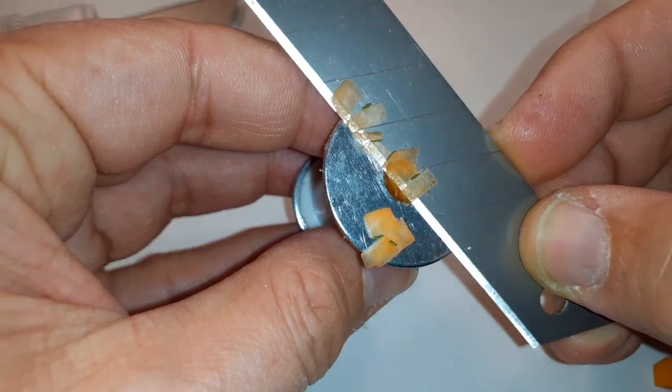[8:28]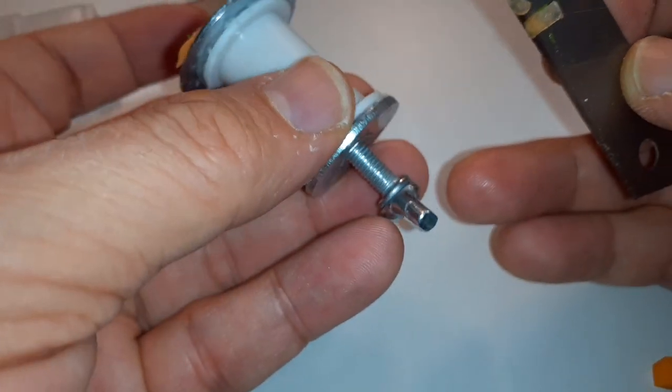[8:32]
So for large quantities, maybe a homemade microtome like this might not serve the very best purpose. But if you only make a few cuts, it works pretty decent. And I would say that the imperfections that the microtome has can be compensated simply by making more trials. The screw is a little bit wobbly, of course. Maybe adding a second nut would stabilize everything a little bit more.
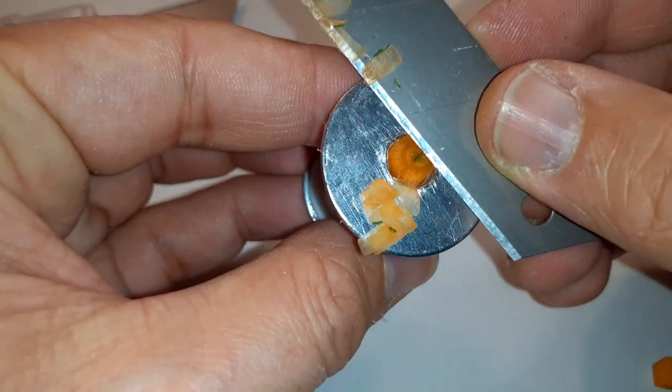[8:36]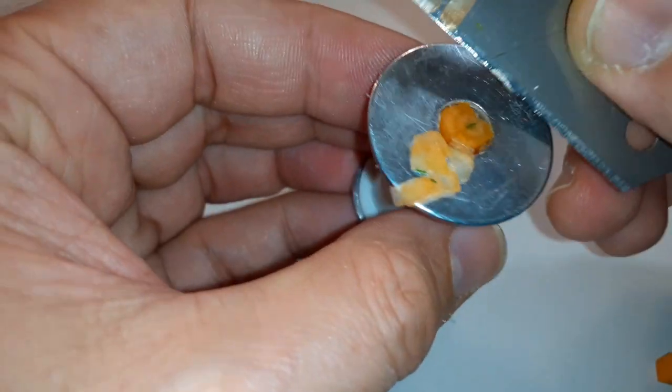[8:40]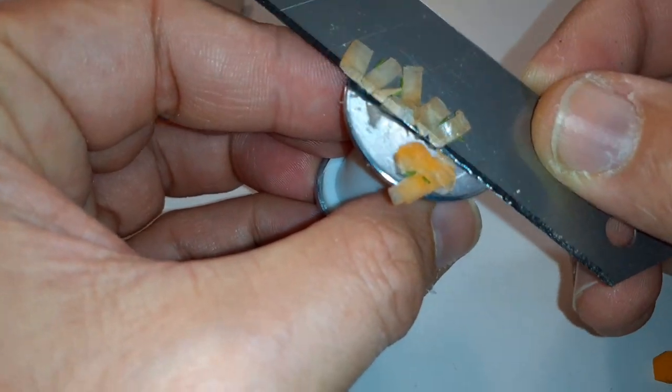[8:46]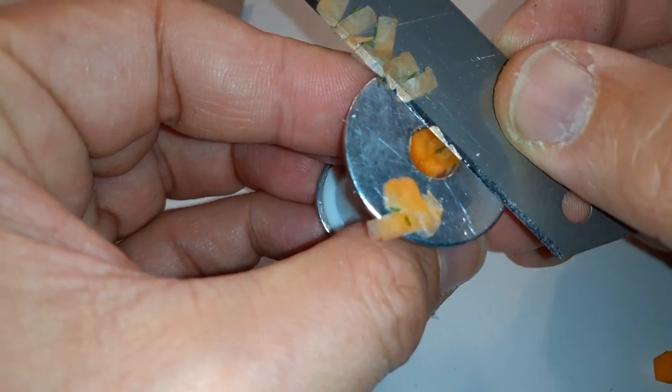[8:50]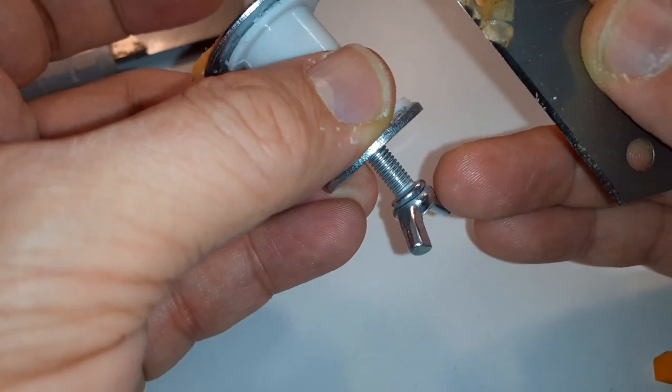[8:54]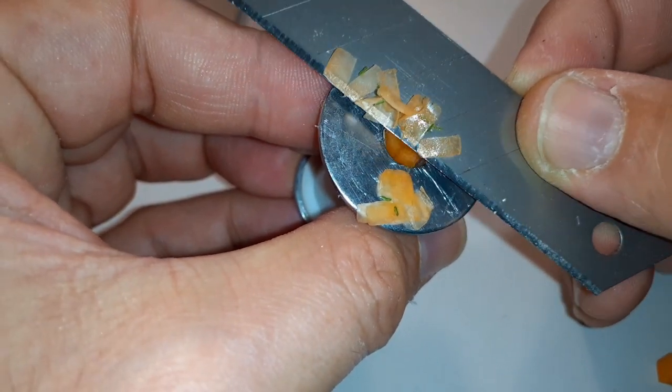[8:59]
You simply try more often, and then one of those cuts is going to be fine. It's just a question of patience, I would say. And so I ended up making several of these. Yeah, see, now it works quite nicely. And I also discovered later that actually the knife was not new. I've already used it before, and there was already a little bit of corrosion on the blade. This might also have contributed.
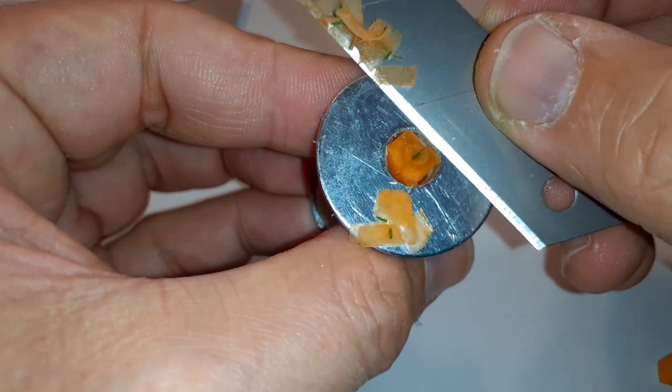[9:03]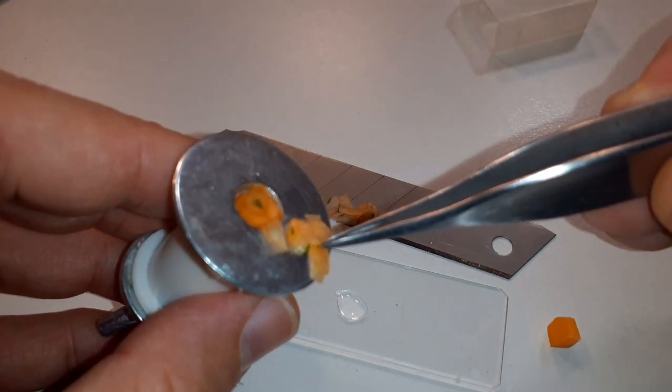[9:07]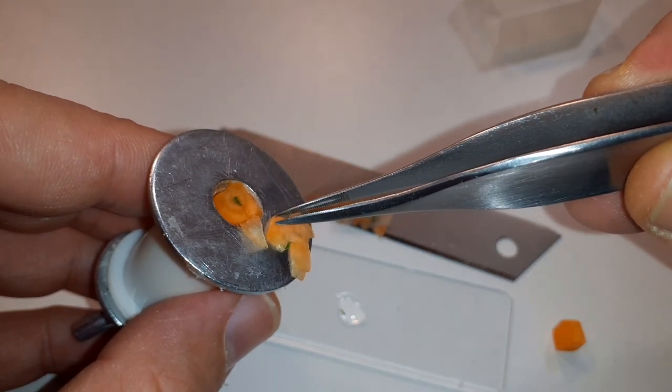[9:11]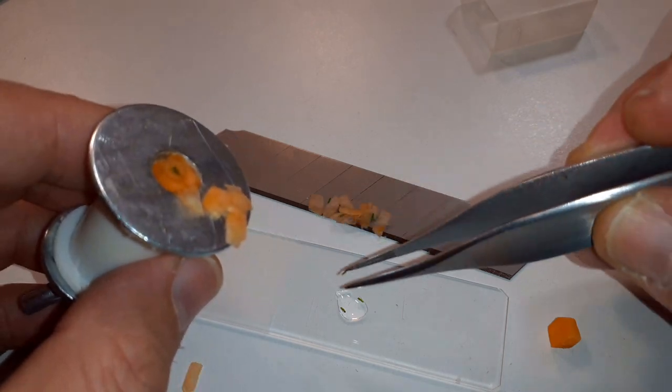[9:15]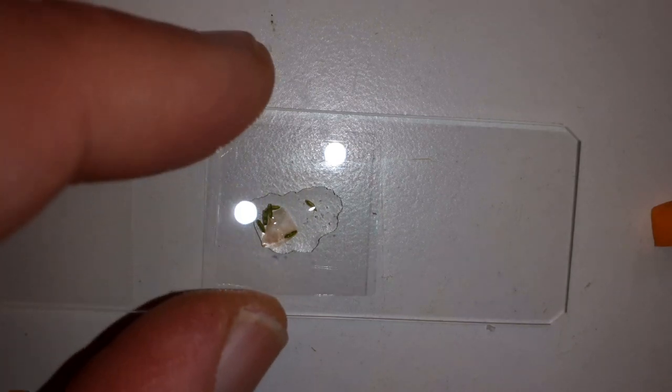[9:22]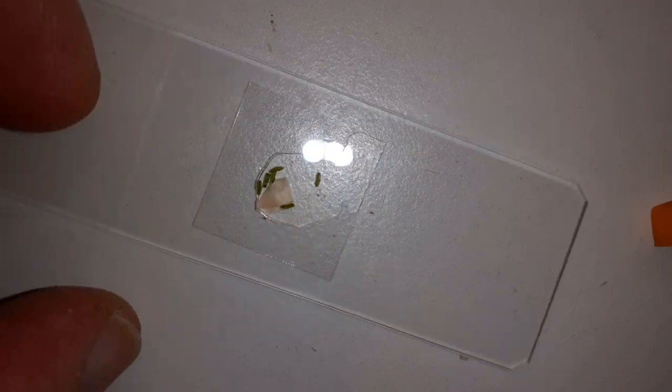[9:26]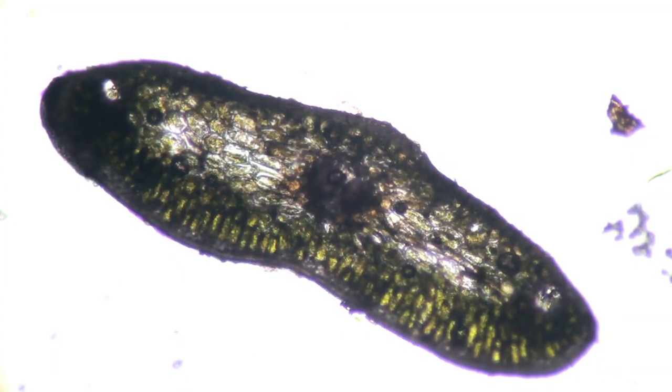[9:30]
Yeah, so that is basically the thing that I've done. And now I'll try to carefully pick some of those cuts, put it into a drop of water. And of course, also a small part of the carrot I wanted to have a look at. And I simply wanted to check if the cuts are thin enough. And just by looking, they seem to be quite thick already. And as a matter of fact, yes, most of them were a little bit too thick, but this one here was fine. It's quite similar to the one that I made with the commercial microtome.
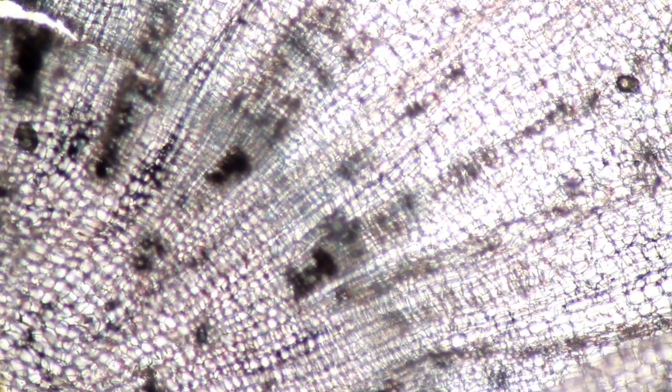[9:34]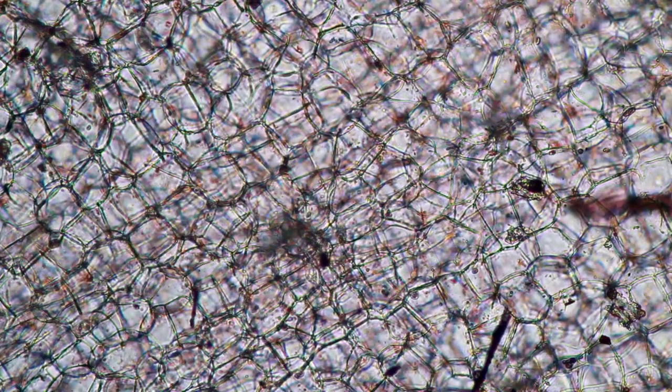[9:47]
This is now the carrot, okay? So you can see that the carrot works actually quite nicely. And these are some of those pine leaves that are a little bit too thick, okay? Seen from the top and from the side. Yeah, so there are several cell layers thick and therefore too dark. Again, the carrot. But one of those cuts was nice, and that's basically what I got.
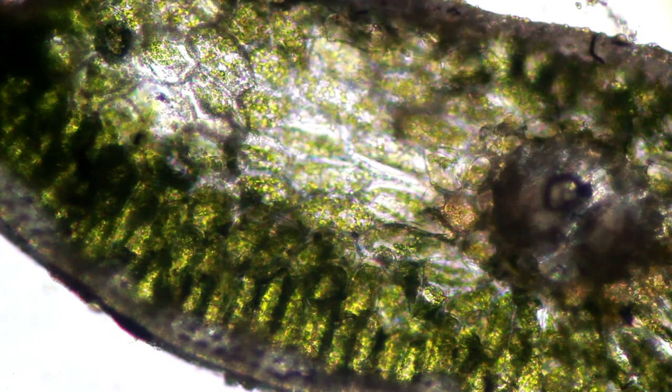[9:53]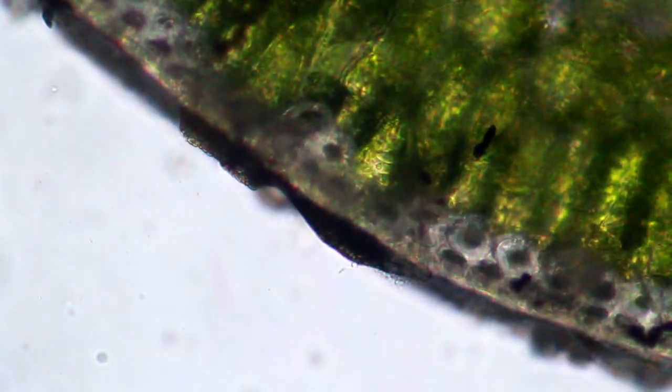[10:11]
And you can see that it's maybe one or two, maximum maybe three cell layers thick. So it's thin enough to actually see the individual cells, and even the green dots, the chloroplasts. You can also see that the different parts of the pine leaf have more chloroplasts than other parts. Of course, the outside has to be highly pigmented because of photosynthesis. They need more chlorophyll. Yeah, that's now in the center a little bit. But you can see it works. Maybe not perfect, but I would say, considering the fact that it was free of charge, I think it's quite nice.